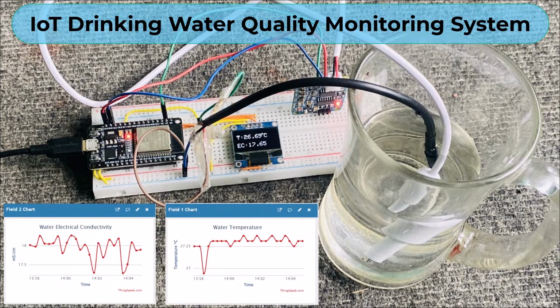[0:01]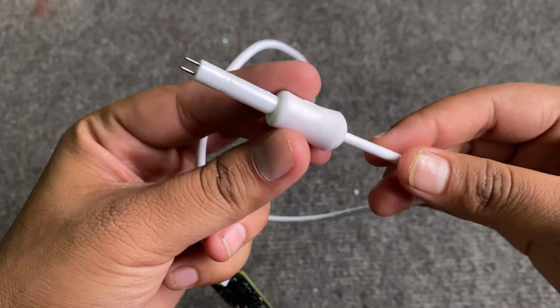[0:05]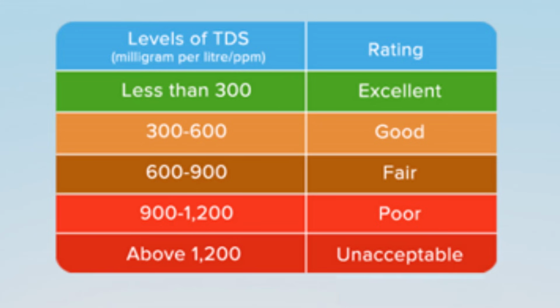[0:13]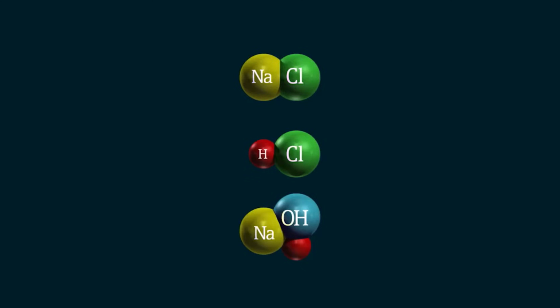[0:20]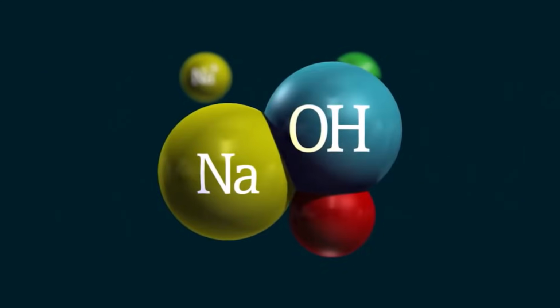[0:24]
This is the TDS sensor that was sent to me by one of the companies in Bangalore called Creologics. This sensor is used for measuring the total dissolved solids in water. Because of the dissolved solids, the water becomes conductive, and there is a term called electrical conductivity to measure that parameter. Based on electrical conductivity, we determine whether the water is suitable for drinking or not.
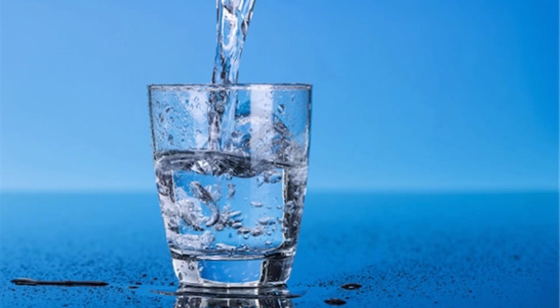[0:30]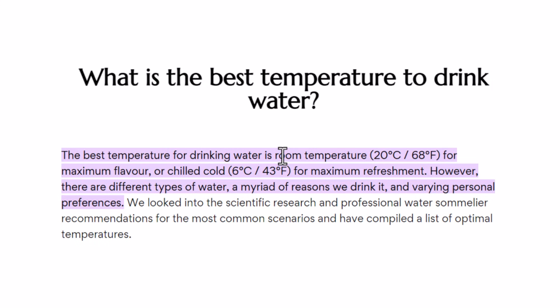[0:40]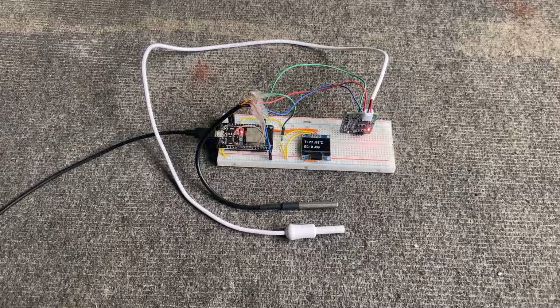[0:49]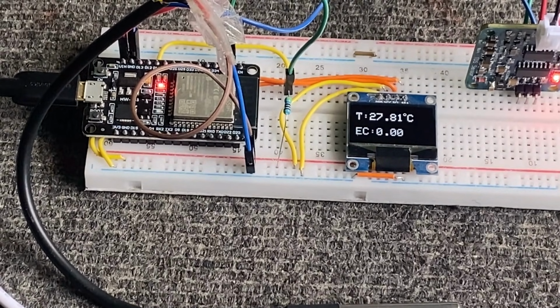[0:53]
According to the WHO standard, the EC value should not exceed 400 microsiemens per centimeter, or 0.4 millisiemens per centimeter. The best temperature for drinking water at room temperature is 20 degrees Celsius, and for chilled cold, it should be 6 degrees. So in this project, we'll determine the drinking water quality using the TDS sensor and also the DS18B20
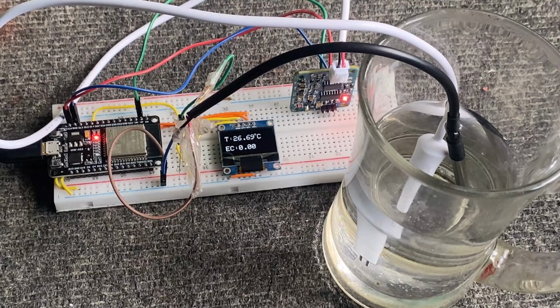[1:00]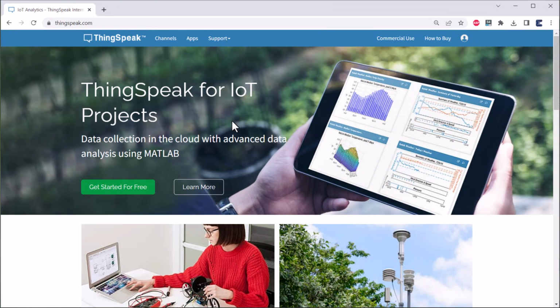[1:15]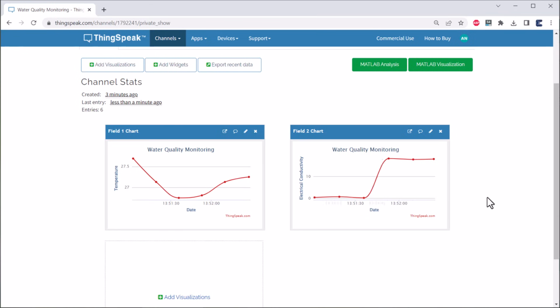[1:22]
waterproof temperature sensor. The controller that we are going to use here is the ESP32 WiFi module. To display the EC value and the temperature value, we'll use a 0.96 inch I2C OLED display. Since we are involving the Internet of Things part in this project, we'll use a ThingSpeak server to display the water quality parameters. The graph displayed on ThingSpeak can be monitored or viewed from any part of the world. Thus, finally, you can have your own drinking water quality monitoring system. So let's see how we can build this.
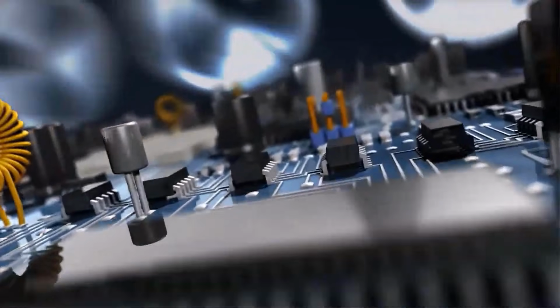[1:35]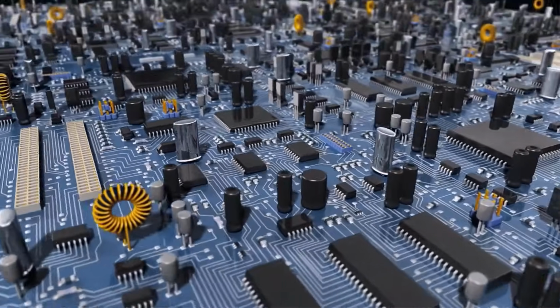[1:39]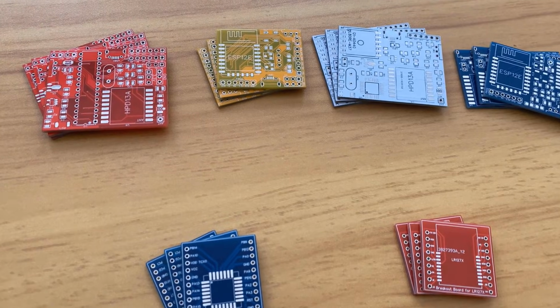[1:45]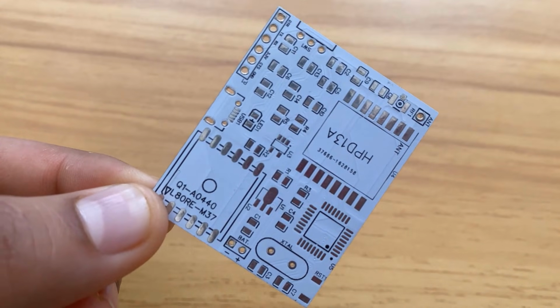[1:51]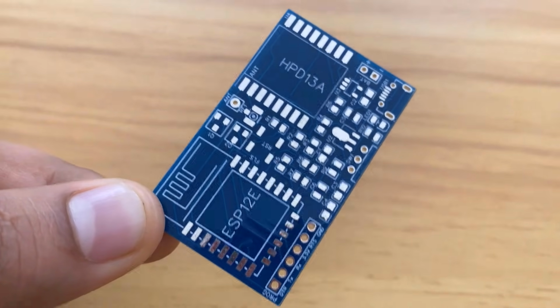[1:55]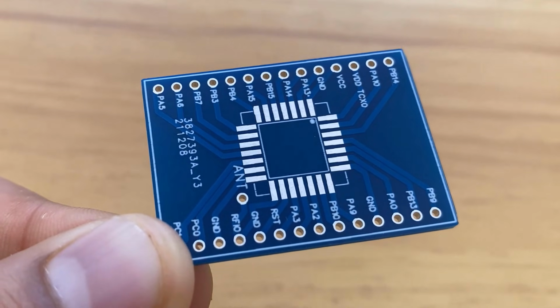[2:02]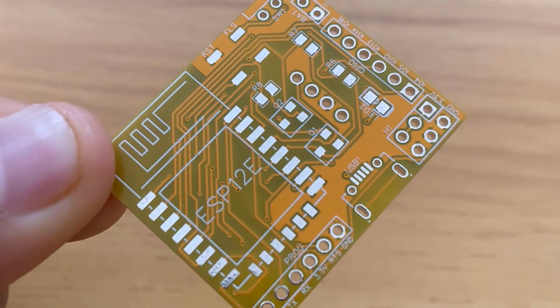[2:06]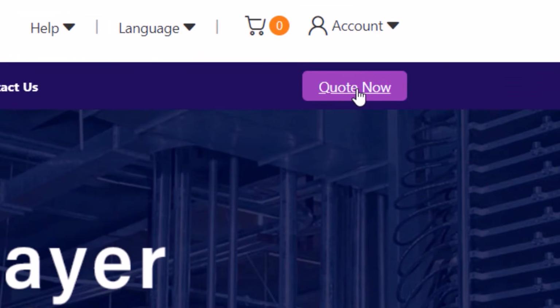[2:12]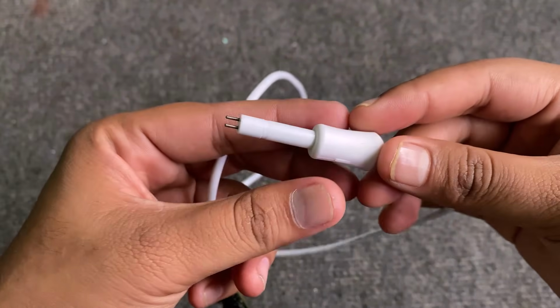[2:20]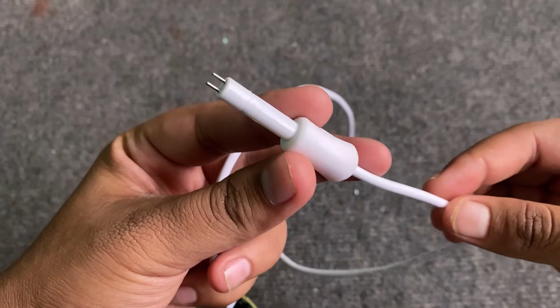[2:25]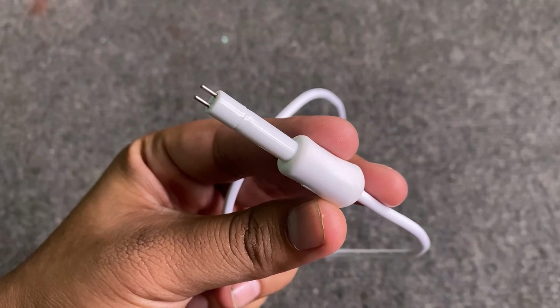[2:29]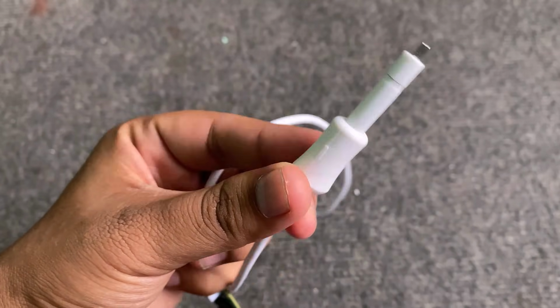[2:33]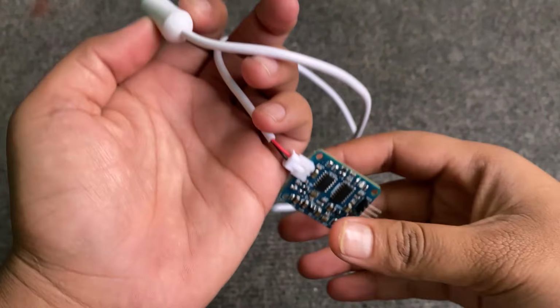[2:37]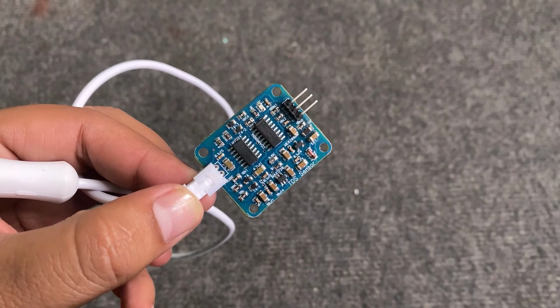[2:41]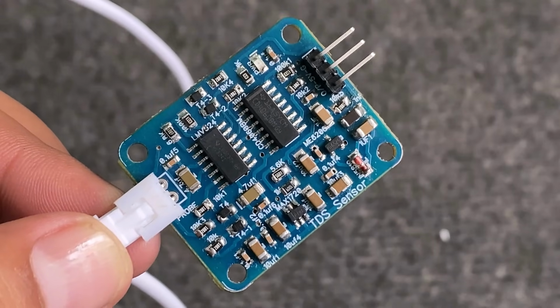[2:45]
Welcome back again. This is the TDS sensor probe for measuring the TDS value of the water. It can be applied to domestic water, hydroponics, and other fields of water quality testing. This product supports a wide 3.3 to 5.5 volt voltage input and 0 to 2.3 volt analog voltage output, which makes it compatible with 5 volt or 3.3 volt control systems or boards.
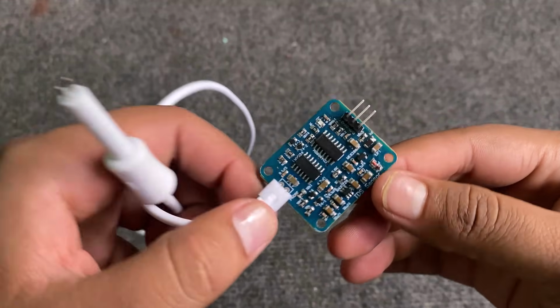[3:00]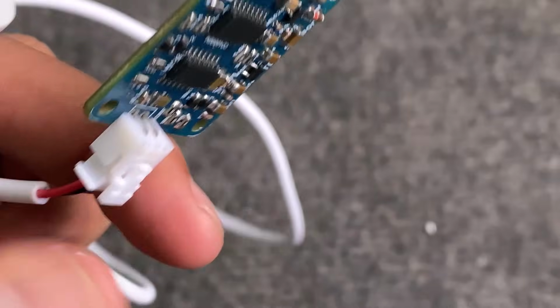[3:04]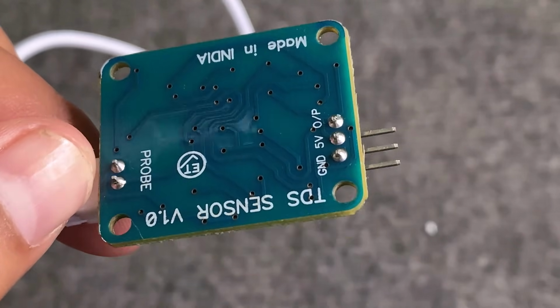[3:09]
This is the signal connector board that connects the TDS sensor probe. Basically, this is an amplifier board with a noise filtering IC that amplifies the low-level signal to a measurable voltage with almost no noise. The output from this board is of analog type, which can be read by the ADC of a microcontroller.
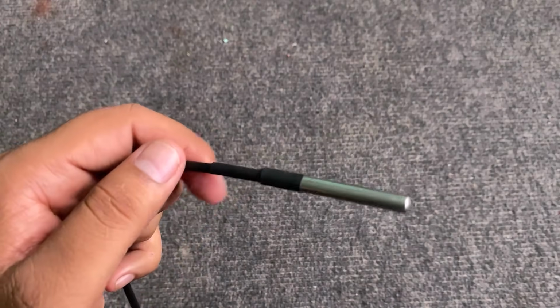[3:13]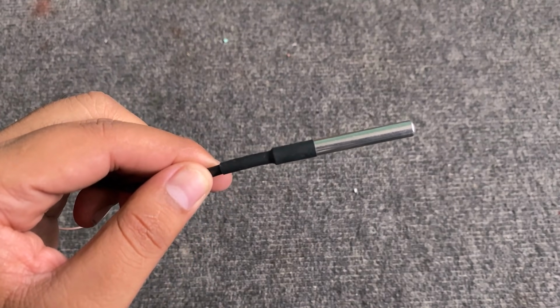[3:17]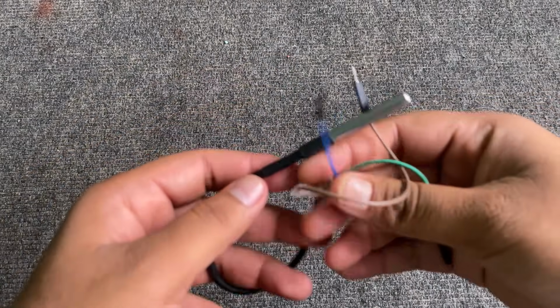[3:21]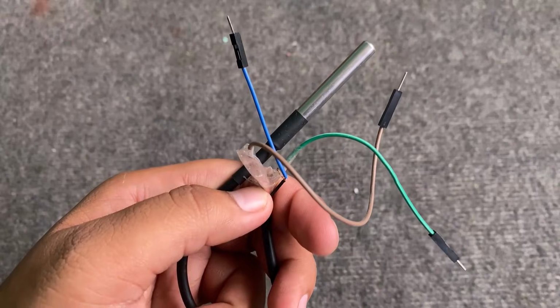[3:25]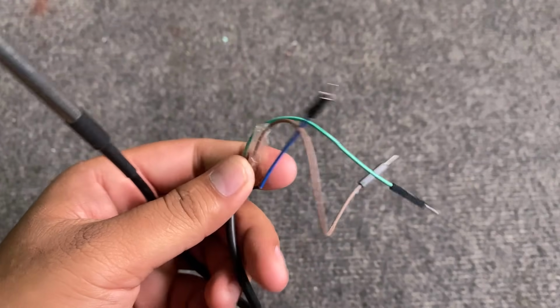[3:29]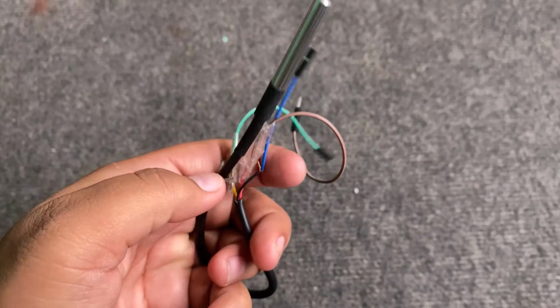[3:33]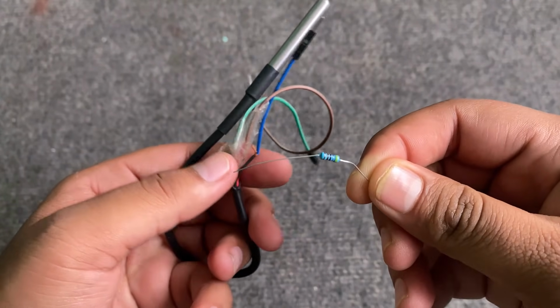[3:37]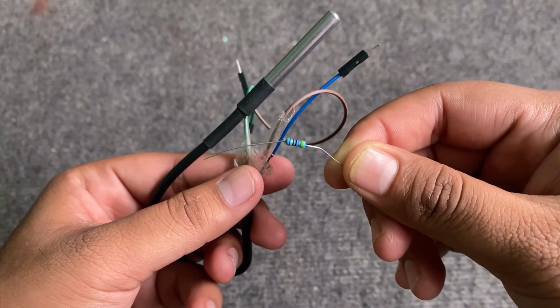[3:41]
This is a DS18B20 waterproof temperature sensor. We need to use this temperature compensation method here to determine the water electrical conductivity. This is because water conductivity rises as temperature rises. The sensor has 3 pins and works on the one wire protocol. The output of this sensor is digital, and it requires a pull-up resistor to get the power from the VCC pin. The power is called parasitic power.
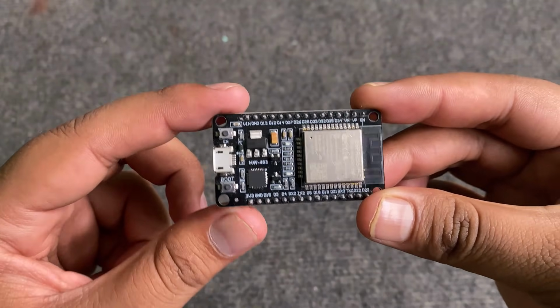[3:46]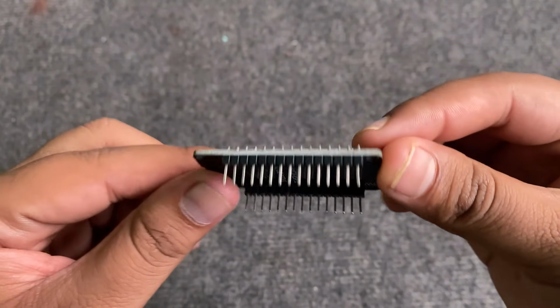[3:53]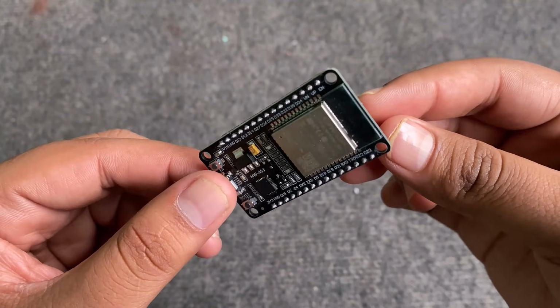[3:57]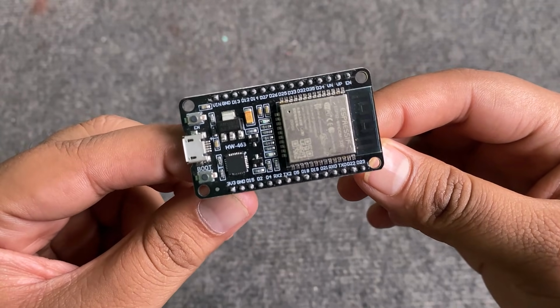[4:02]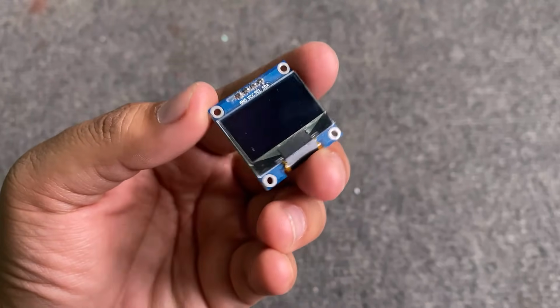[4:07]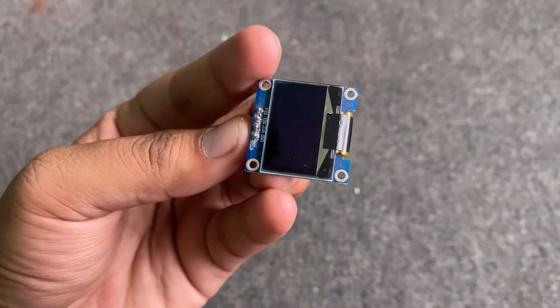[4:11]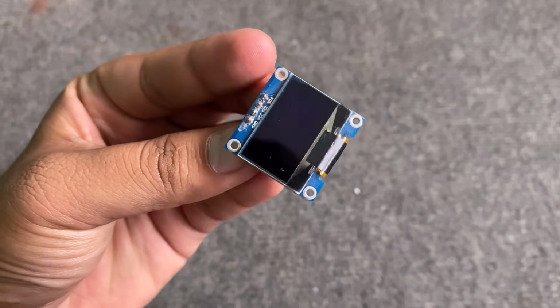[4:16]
The most important part of this project is the microcontroller. We'll use the ESP32 Wi-Fi module for this project. The ESP32 has a Wi-Fi chip for IoT applications. It has analog and digital pins for connecting sensors. We'll interface the TDS and temperature sensors with this board. This is a 0.96 inch SSD1306 I2C OLED display. We are using this display so that we can display the temperature and EC value on this tiny display unit.
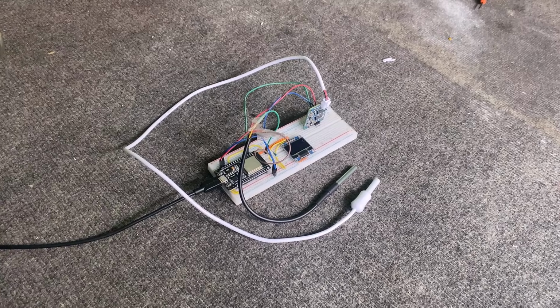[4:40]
Here is the connection diagram for this project. The TDS sensor output is connected to the A0 pin, that is GPIO36 of the ESP32. Similarly, the DS18B20 sensor output pin is connected to GPIO25 of the ESP32 board, and we connected the OLED display to the I2C pins of the ESP32. For testing purposes, I assembled the given circuit on a breadboard.
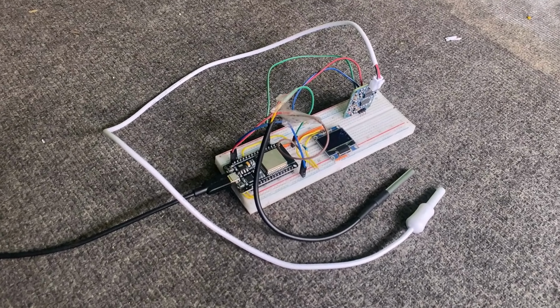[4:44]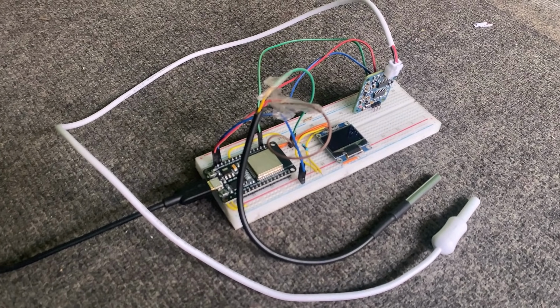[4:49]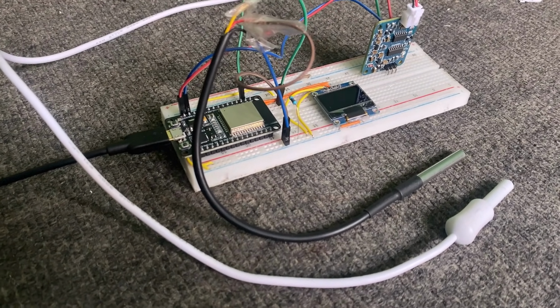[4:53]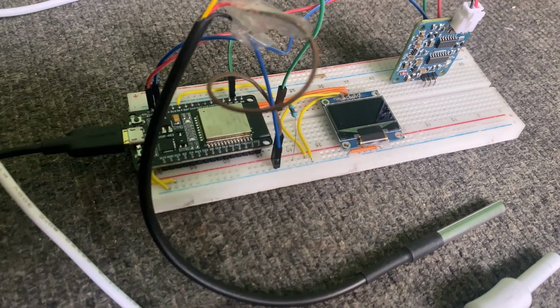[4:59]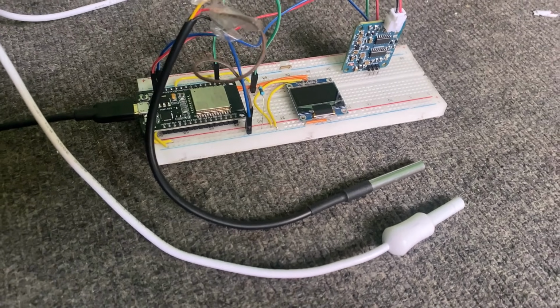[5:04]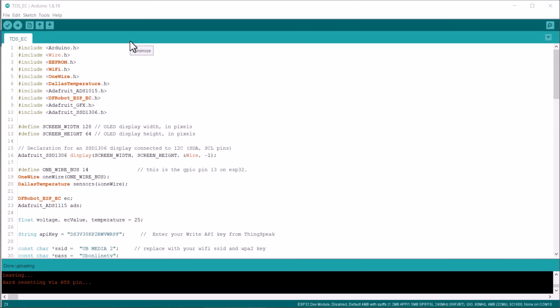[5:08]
So, as you can see here, the ESP32 module, OLED display, temperature sensor and TDS sensor are connected to ESP32 with the help of jumper wires. In case you want to use a custom PCB for this project, you can use a PCB designed using EasyEDA. The Gerber file of the PCB is given in the website article. Now, let's move to the programming part of this project.
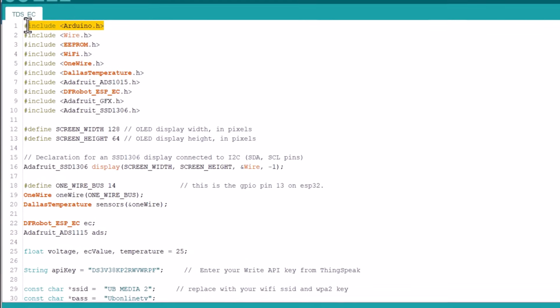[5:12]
A lot of libraries are required here. We are using the EEPROM library for calibration data storage. Wi-Fi library is for Wi-Fi communication. The OneWire and the Dallas Temperature library are used for the DS18B20 temperature sensor. The ADS1015 is used for the ESP32 ADC pin. The DFRobot ESP EC library is written for calculating the EC value. The GFX and SSD1306 library is used for the OLED display.
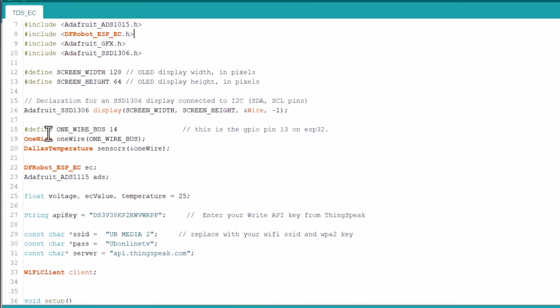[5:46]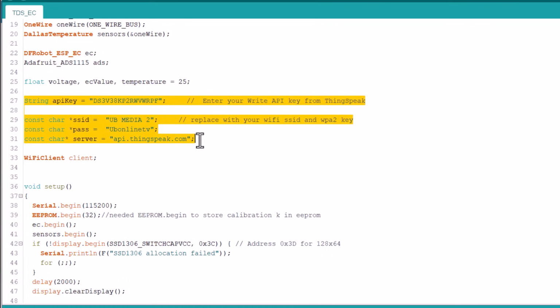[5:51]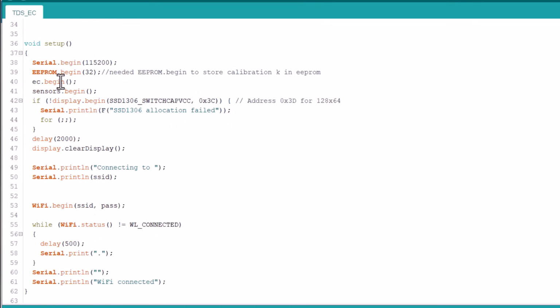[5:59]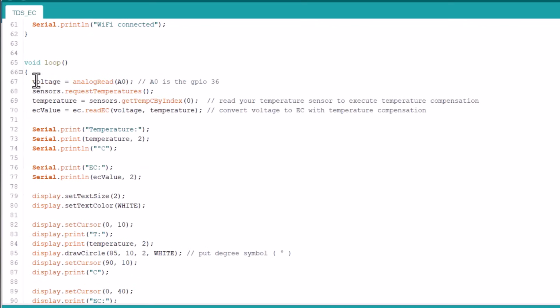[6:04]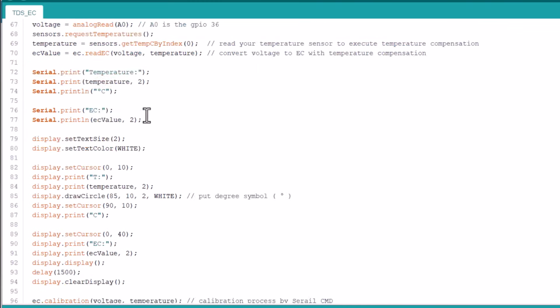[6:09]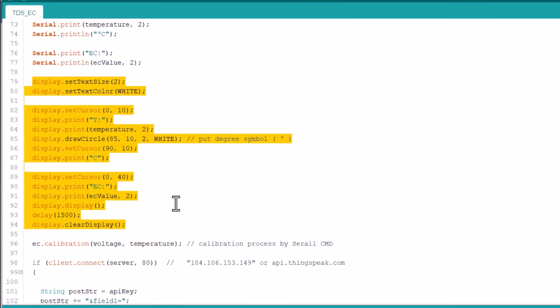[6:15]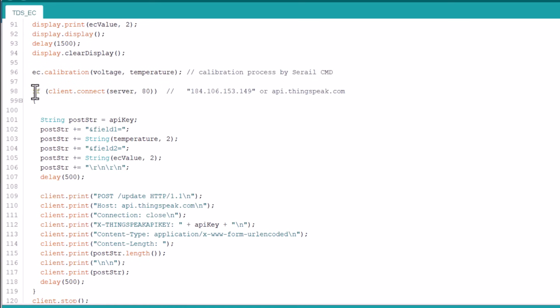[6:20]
In these lines, we need to change some parameters. This is the string API key for establishing a connection with the ThingSpeak server. Change the Wi-Fi SSID and password from these lines. In the setup part, we are initializing EEPROM, TDS and temperature sensor and also the OLED display. In the loop section, we calculate temperature and EC value using some library functions. Then we are printing all these values on the 0.96 inch OLED display. This line is for calibrating the sensor. Then using the HTTP POST method, we'll post the sensor data to the ThingSpeak server.
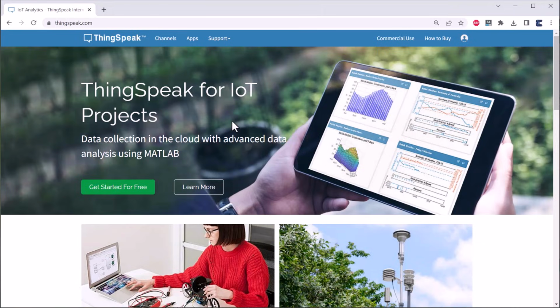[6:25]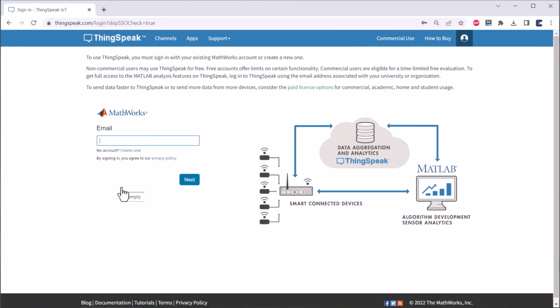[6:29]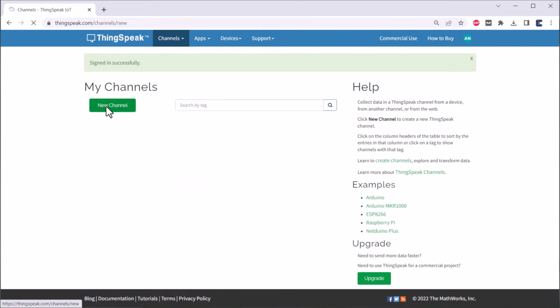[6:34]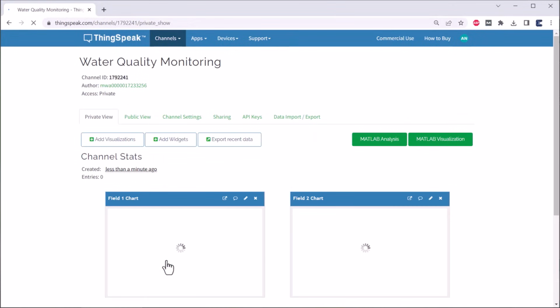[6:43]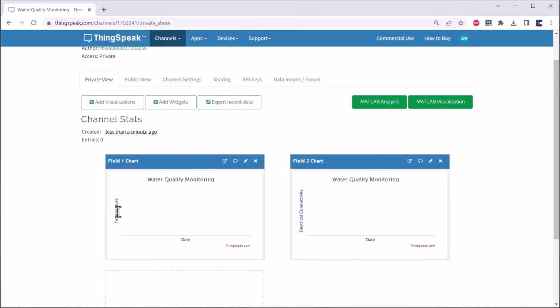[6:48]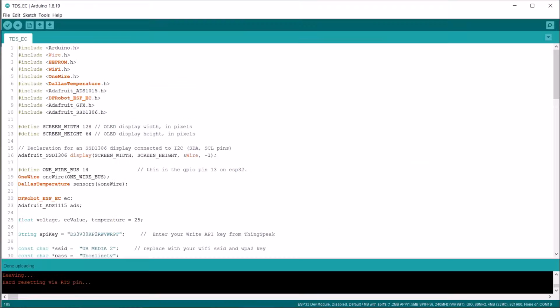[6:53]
Now let's set up the ThingSpeak server first. For that, go to thingspeak.com and log into or create an account using the email and password. Then create a new channel. Give any name to the channel. Field 1 gives temperature and field 2 gives electrical conductivity. So two charts are created here. These charts are used to display the sensor data. Now go to the API keys section. From here, copy the write API key and paste it onto the line of this code. Thus, code modification is completed now.
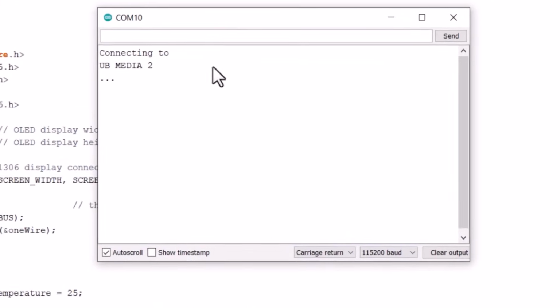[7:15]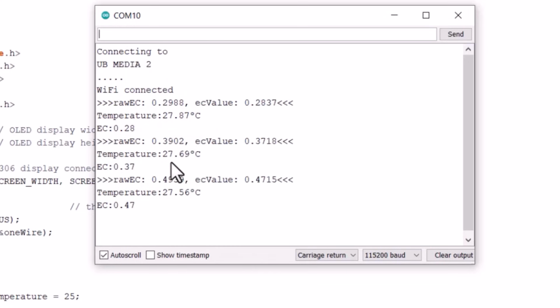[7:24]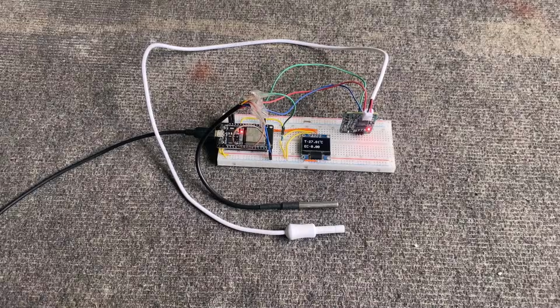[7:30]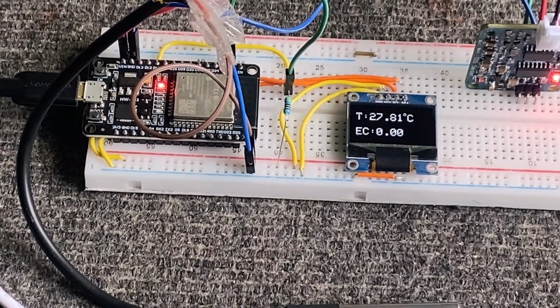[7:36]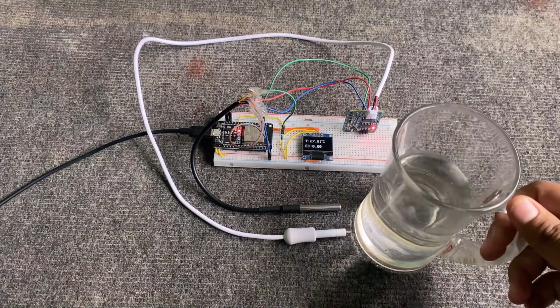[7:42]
Now go to Tools and select the ESP32 Wi-Fi module from the list. Also select the COM port. Then click on the Upload button to upload the code. Once the code is uploaded, it will try connecting to the Wi-Fi network. On a successful connection, the serial monitor will display the read data from the sensor. This means our system is working fine. Now to test the project, we'll use the OLED display. The OLED display will display the room temperature, which is 27 degrees now, and it is also displaying the EC value as 0. This is because the sensor is not in contact with liquid and is free in the air.
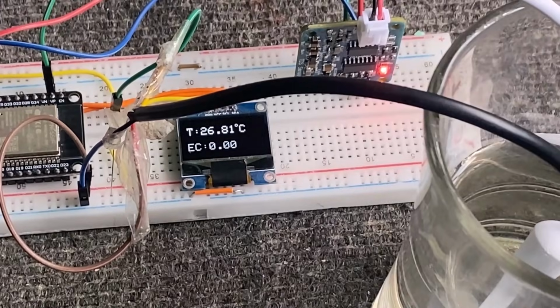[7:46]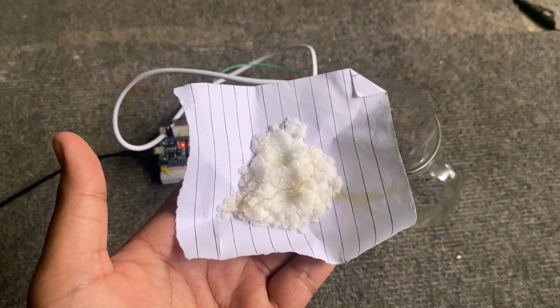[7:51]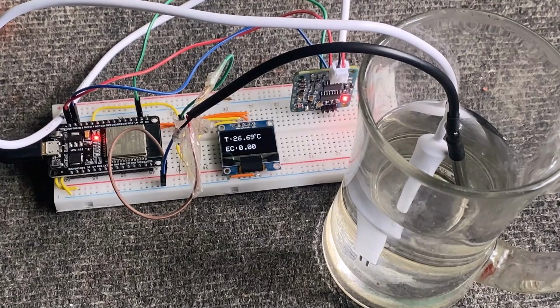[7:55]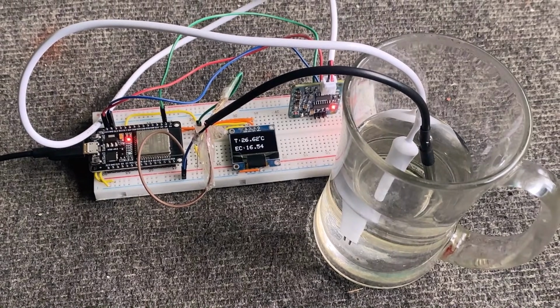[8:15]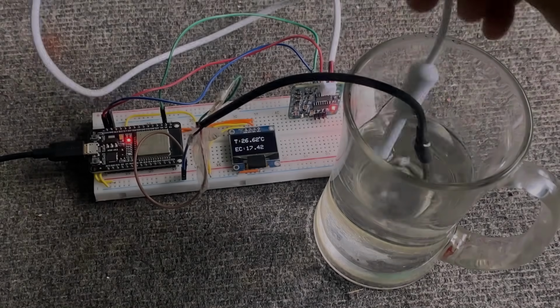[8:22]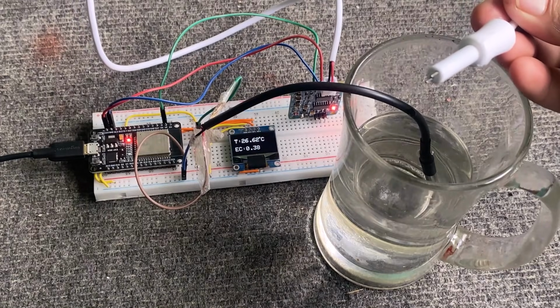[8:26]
To test its working, I'll use salt, as salt water is a great conductor of electricity. It can be useful for testing applications. Since the water is distilled, the EC value is almost 0 here. Now to make changes to the EC value, I'll start adding the salt to the water. So you can see here, adding salt to the water has started making changes to the EC value. It is rising gradually. The more you add and dissolve the salt, the higher the EC value. When you remove the sensor probe, the EC value will gradually drop as the water starts drying and affecting the conductivity.
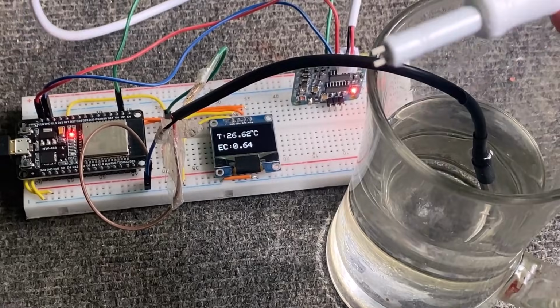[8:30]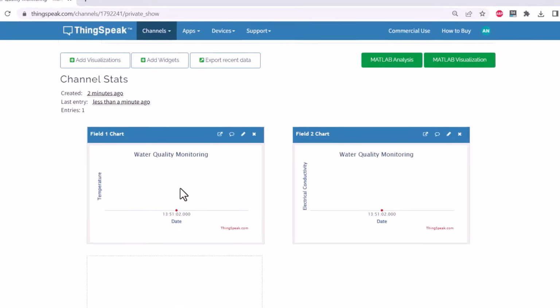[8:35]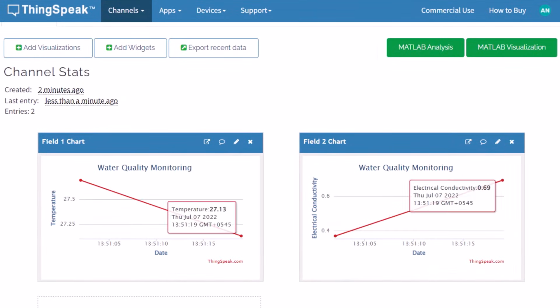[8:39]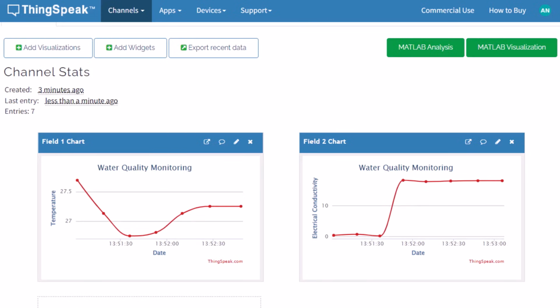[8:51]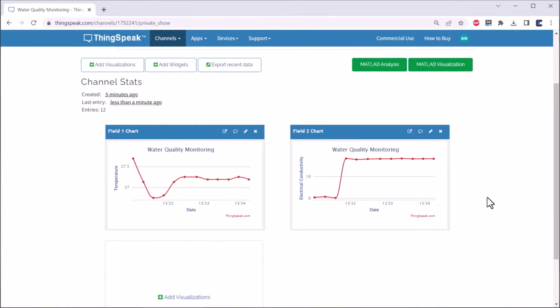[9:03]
Now let's monitor this data online on the internet. To do that, go to the private view of the ThingSpeak server. So you can see here, the data is being uploaded at a regular interval of every 15 seconds. You can share this data publicly as well, so that it can be viewed from any part of the world by anyone. To monitor the drinking water data, you can just place the device at a remote location and stay at home. Use the mobile dashboard or the desktop dashboard to monitor this data wirelessly.